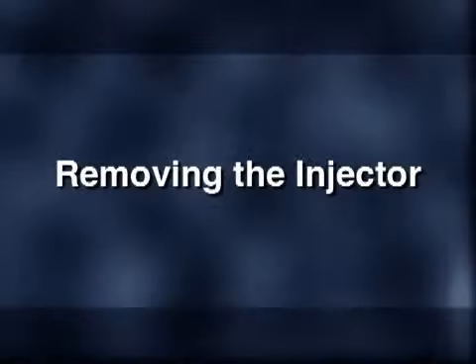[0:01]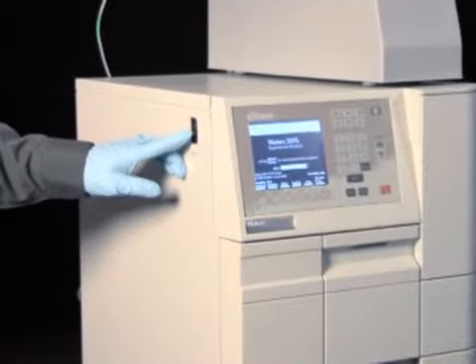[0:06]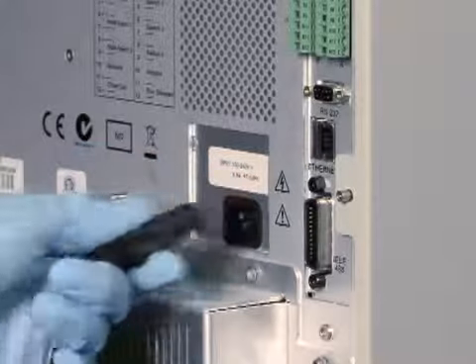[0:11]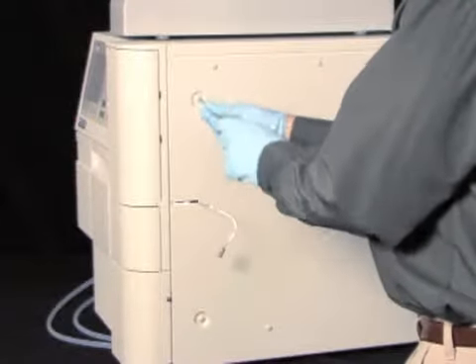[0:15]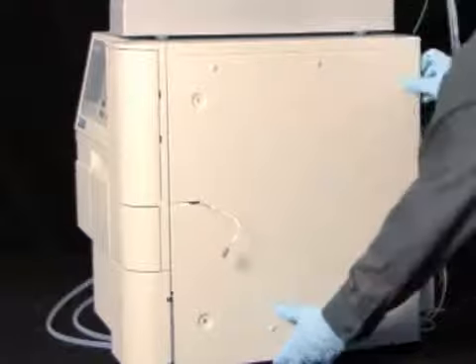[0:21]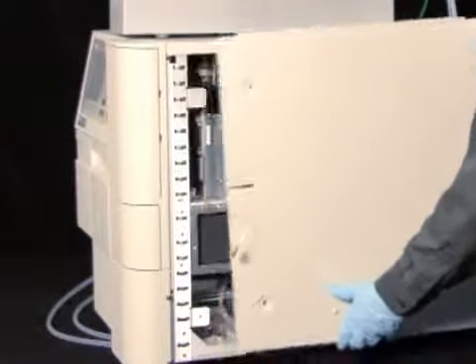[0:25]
Turn the 2695 separations module off and disconnect the power cord. If present, remove the optional column heater or column heater cooler by lifting it from its keyed ports, and then disconnecting its cable from the rear of the separations module. Remove the right side panel.
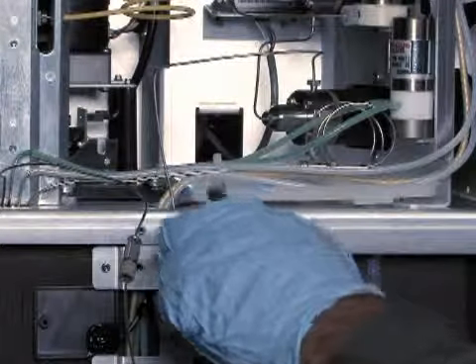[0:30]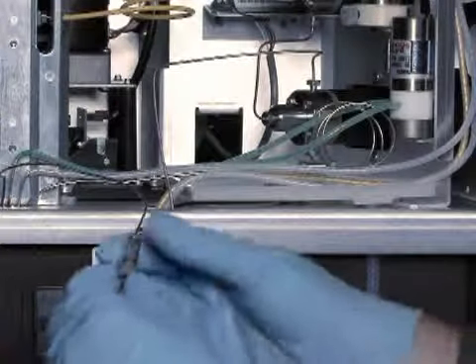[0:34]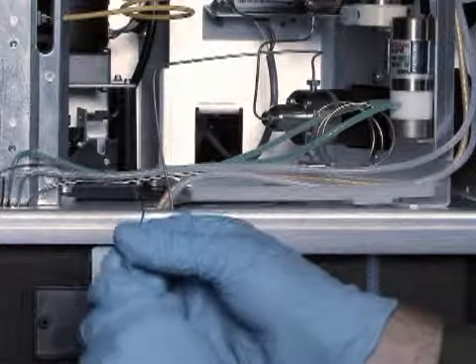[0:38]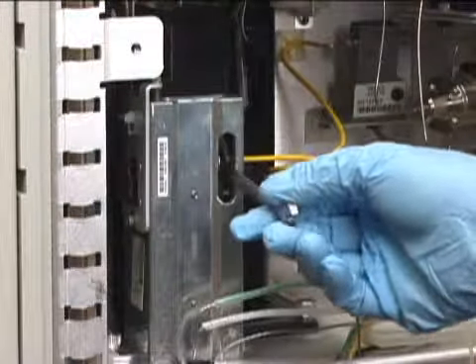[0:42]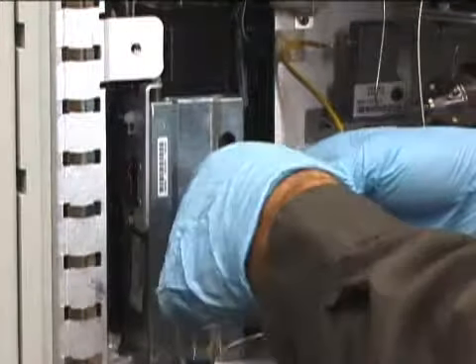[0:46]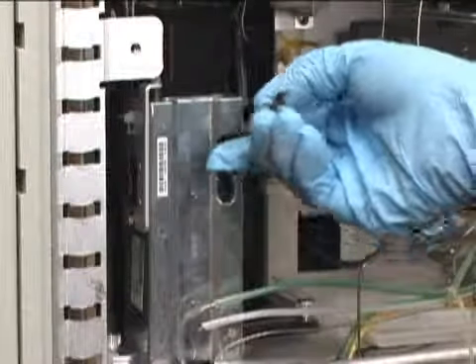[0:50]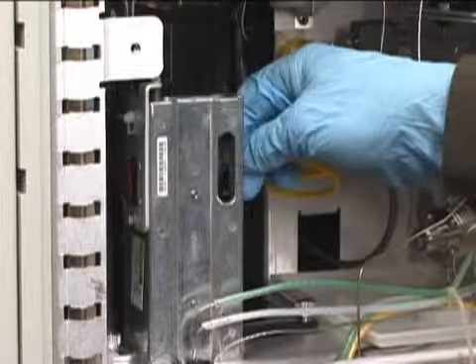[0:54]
Next, cut and remove the tie wraps securing the needle wash lines and restrictor loop. Disconnect the column fluid line between the injector assembly and the column. Using two 5/16" open-end wrenches, position one on the compression fitting of the sample loop and the other on the needle T. Loosen and remove the sample loop from the T.
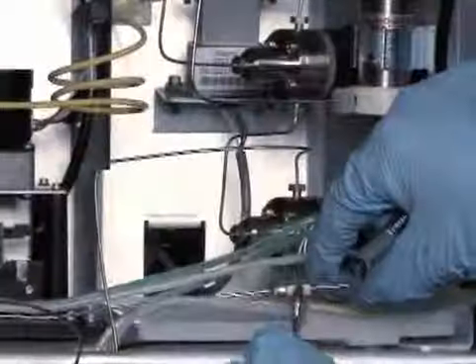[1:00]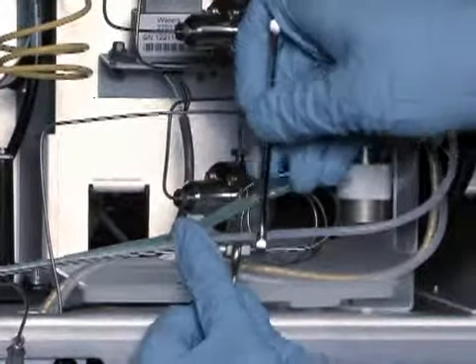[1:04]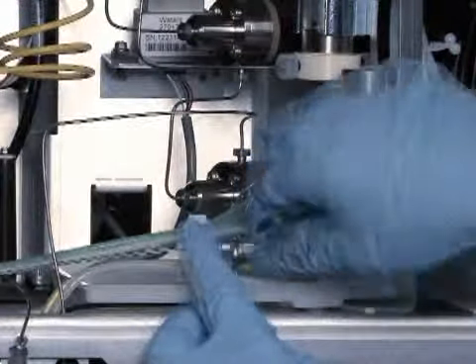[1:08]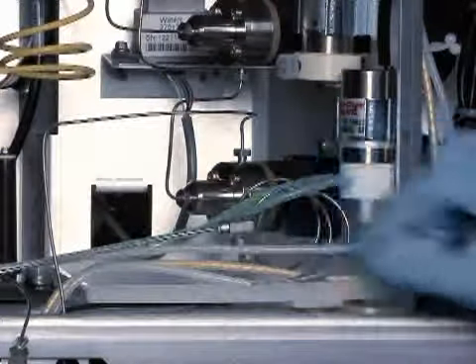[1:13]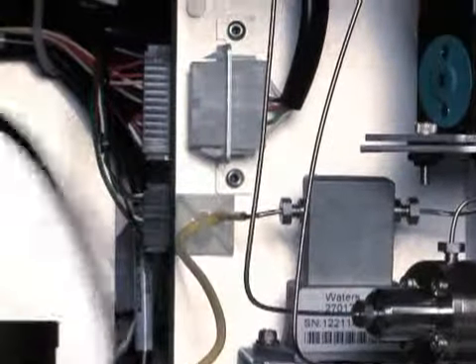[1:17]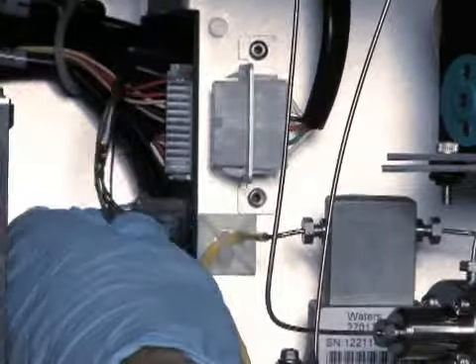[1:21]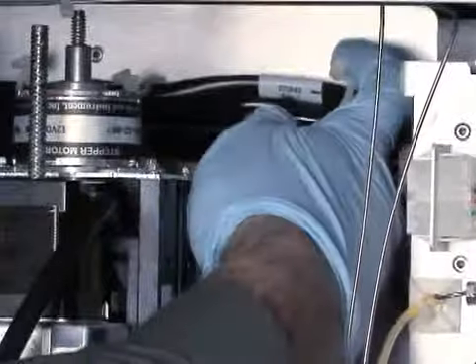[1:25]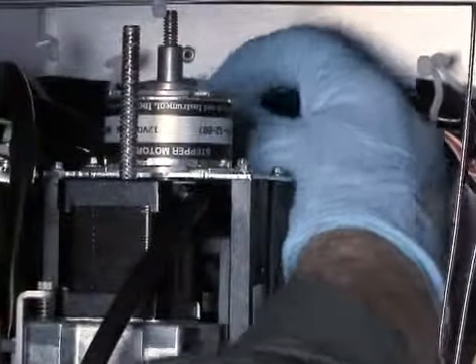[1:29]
Using two 5/16" open-end wrenches, remove the restrictor loop that's attached to the shorter of the two stainless steel tubes exiting the bottom of the injector. Disconnect the injector motor cable from the interconnect on the chassis-mounted bracket. Disconnect the optical switch cable from the driver circuit board. Then untie the four reusable tie wraps to free the optical switch.
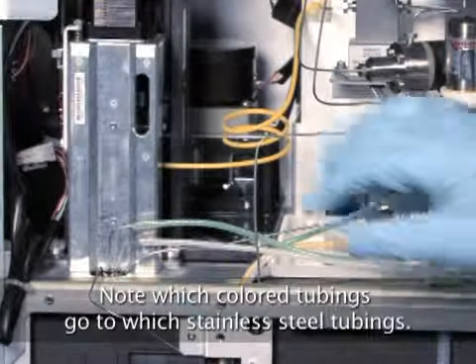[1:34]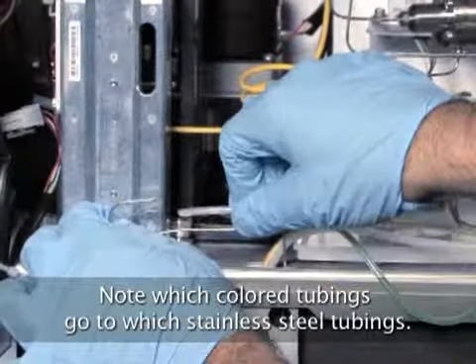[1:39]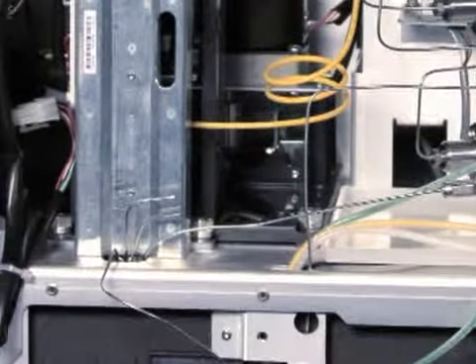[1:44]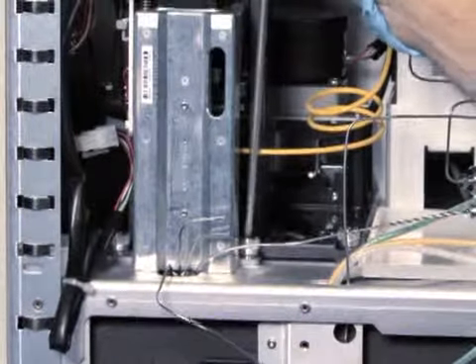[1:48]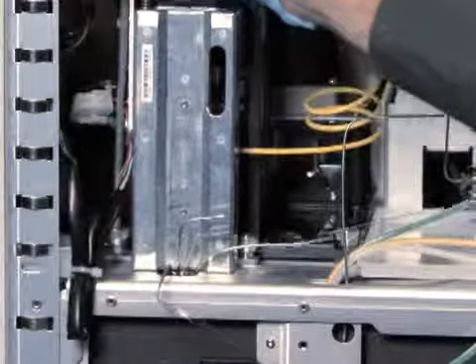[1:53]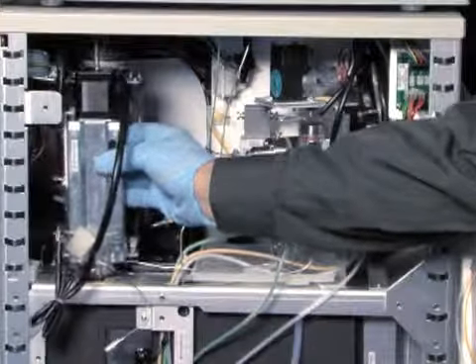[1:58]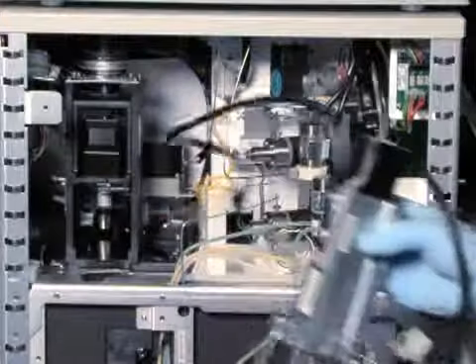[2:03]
Remove the green needle wash inlet line and the yellow or clear needle wash outlet line from the stainless steel connecting lines at the bottom of the injector. Loosen the two captive mounting screws that secure the injector to the chassis. Lift the injector assembly a few inches and then carefully remove it and its cable from the instrument. Carefully lay the injector on a clean surface on its side.
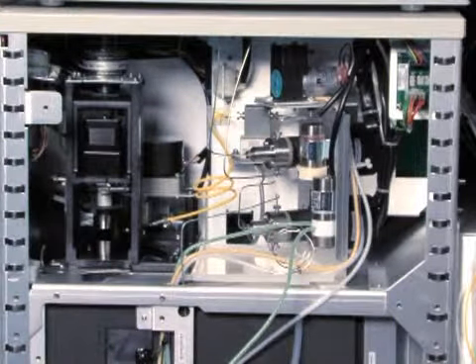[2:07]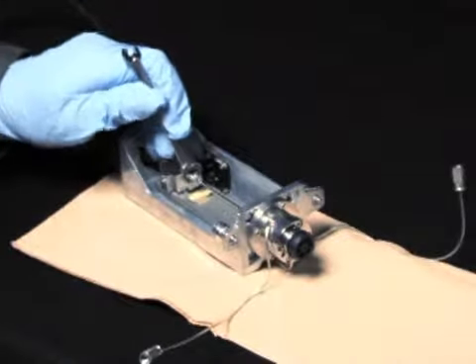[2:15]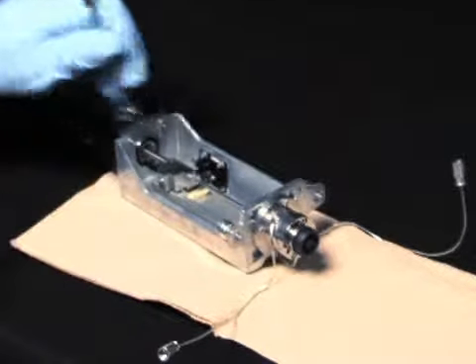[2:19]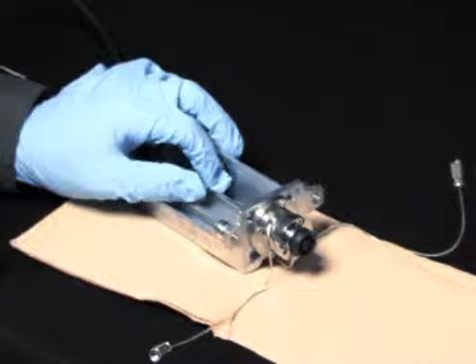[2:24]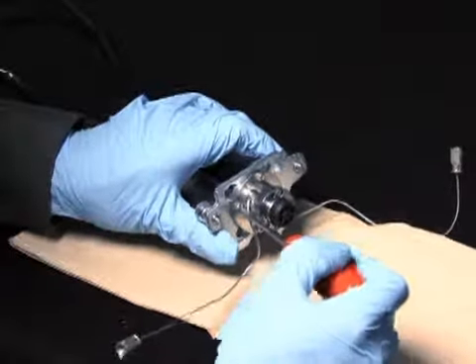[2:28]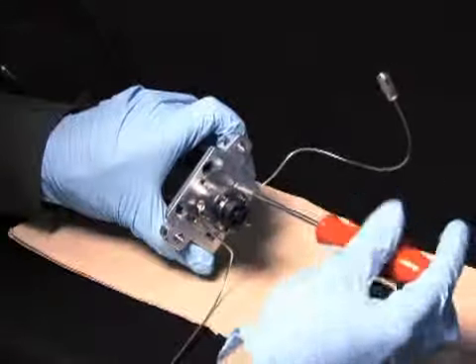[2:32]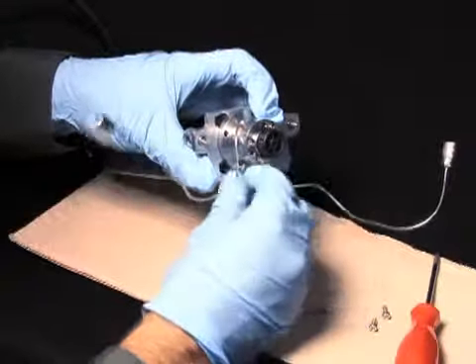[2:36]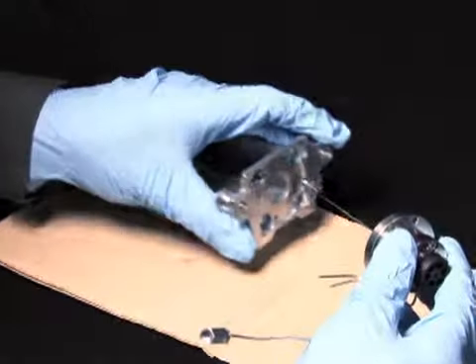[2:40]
Using two 5/16" open-end wrenches, disconnect the injector needle from the needle T. Loosen and remove the four M3 screws that secure the seal pack to the base of the injector. Finally, remove the seal pack with needle and place it on a clean surface.
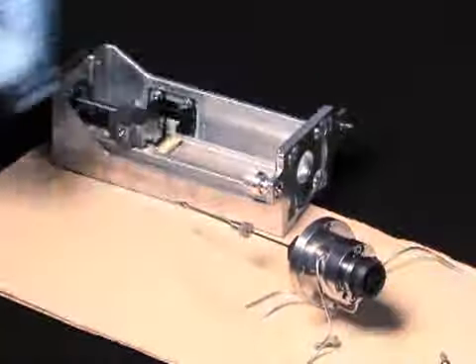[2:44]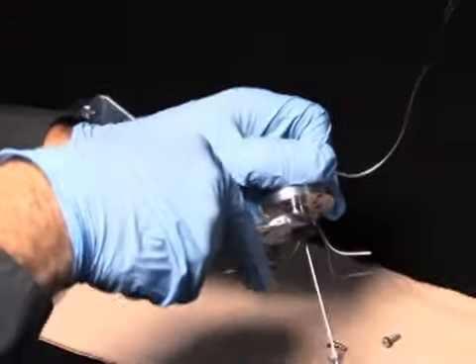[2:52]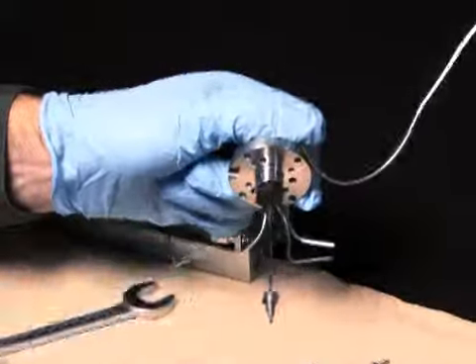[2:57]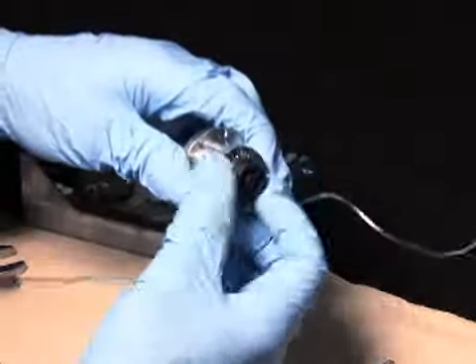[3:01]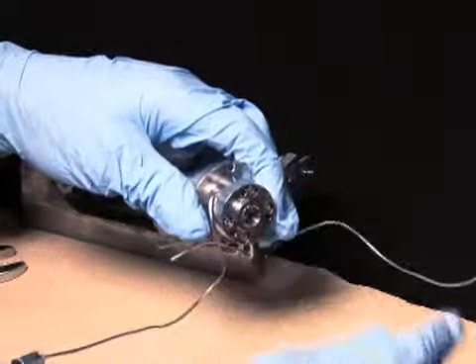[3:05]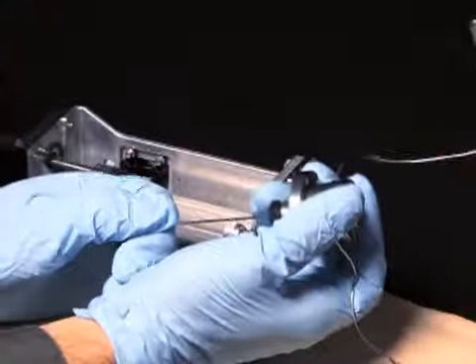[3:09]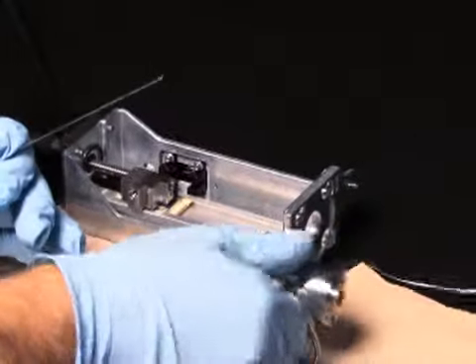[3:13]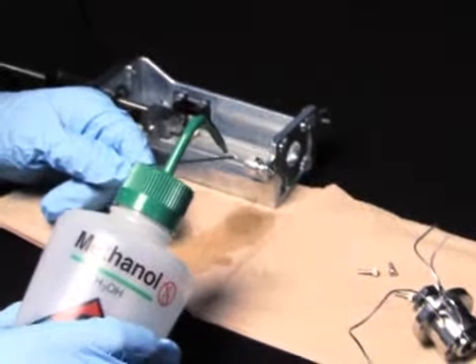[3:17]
To remove the needle, loosen the seal pack's upper and lower frit retainers. The upper frit retainer requires a 5/16" open-end wrench. Grasp the upper end of the needle and carefully withdraw the needle from the seal pack. Lubricate the tip of the new injector needle with 100% alcohol.
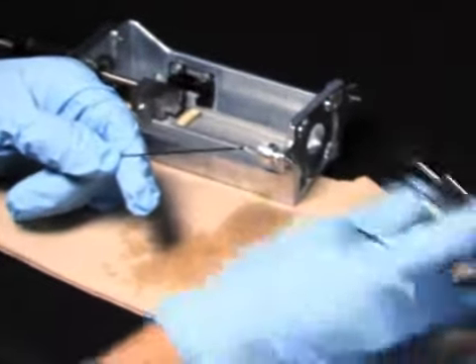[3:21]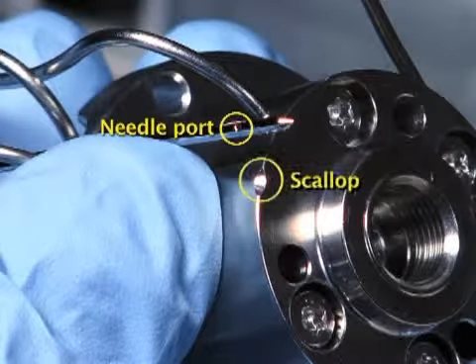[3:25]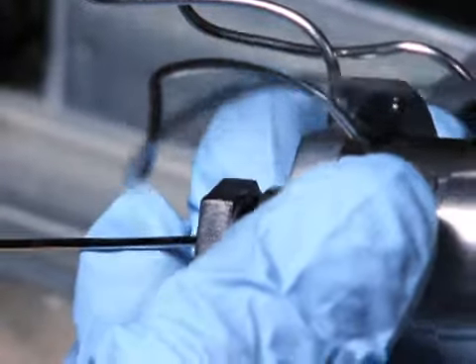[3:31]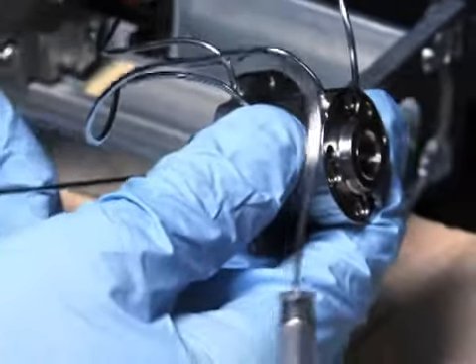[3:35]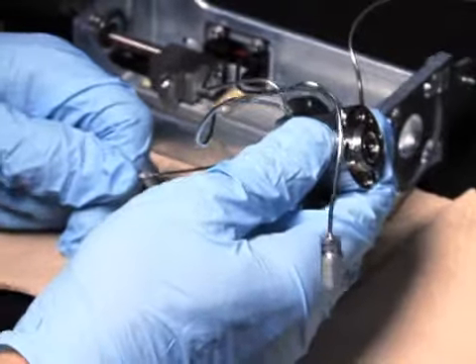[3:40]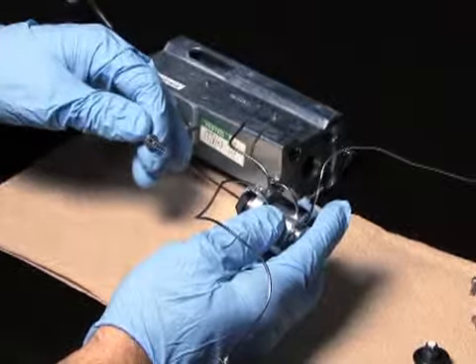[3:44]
Next, orient the needle port about 1/8 inch to the left of the scallop located on the underside of the seal pack. Then, carefully slide the seal pack onto the needle. The needle should align with the scallop when the compression screw is tightened. Place the needle compression screw and ferrule onto the upper end of the needle.
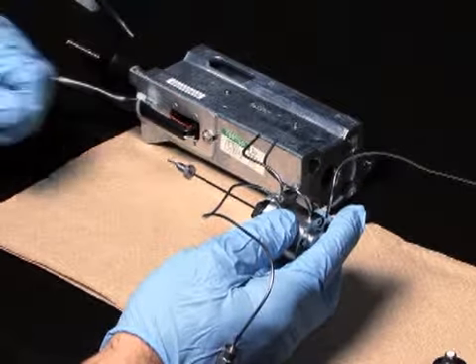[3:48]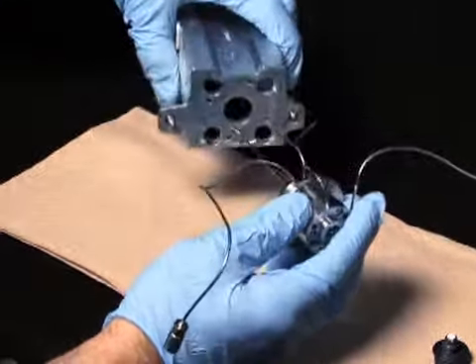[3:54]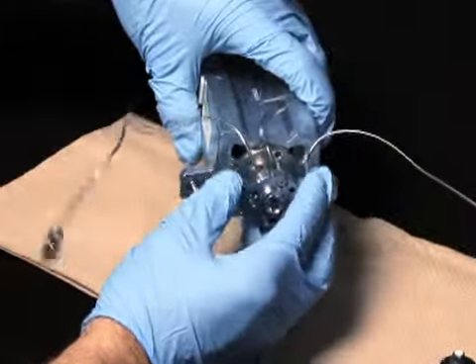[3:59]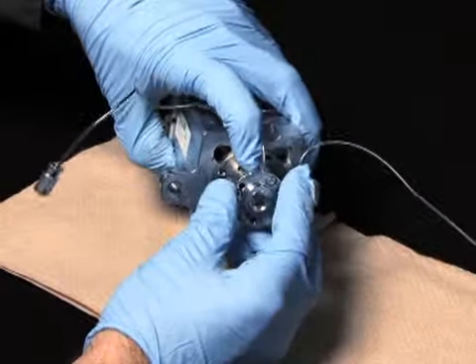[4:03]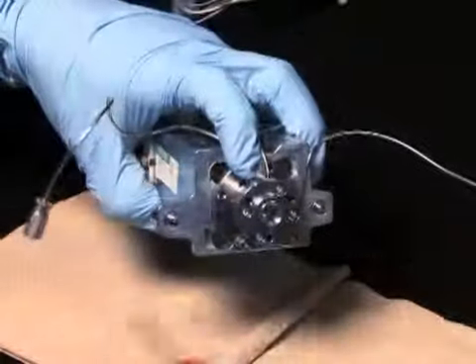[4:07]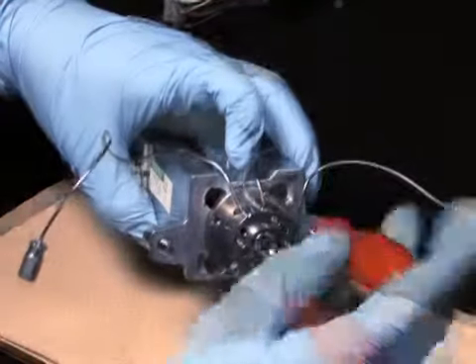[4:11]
Next, position the seal pack with needle so that the stainless steel needle wash lines face the channel in the back of the injector. Align the four holes in the seal pack and injector base, and insert the seal pack with needle into the injector base. Reinstall the four screws that secure the seal pack to the injector base plate. Do not tighten.
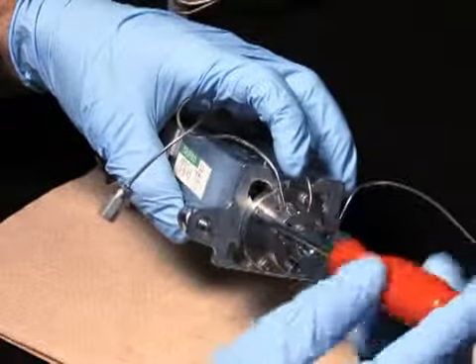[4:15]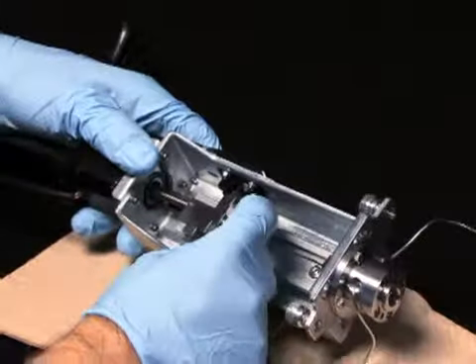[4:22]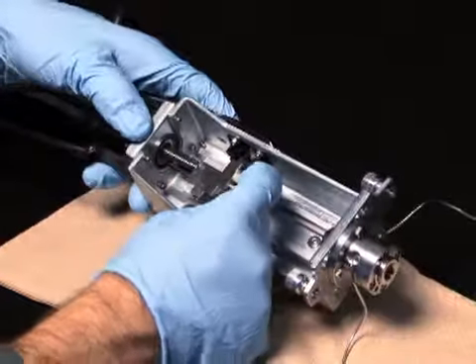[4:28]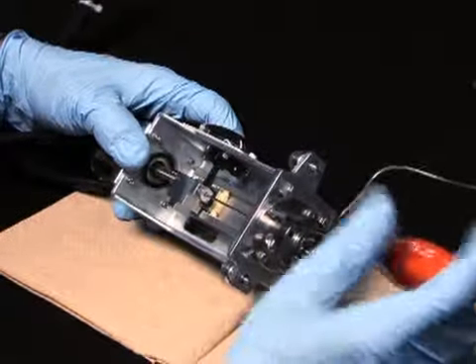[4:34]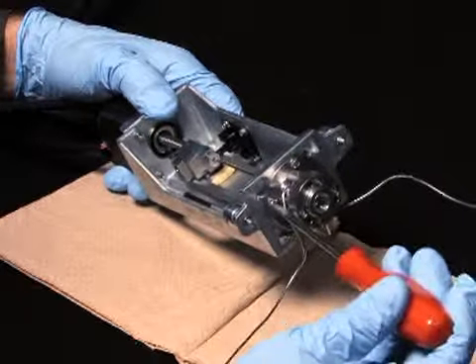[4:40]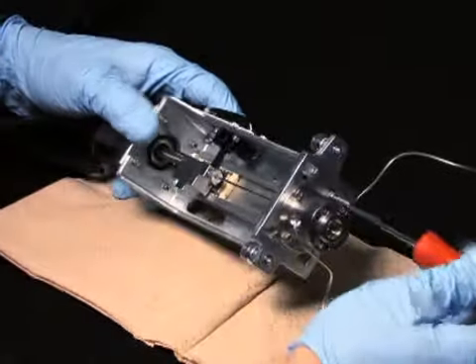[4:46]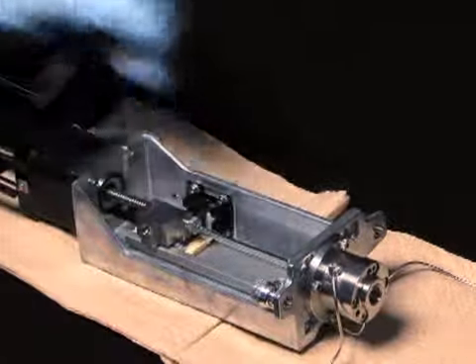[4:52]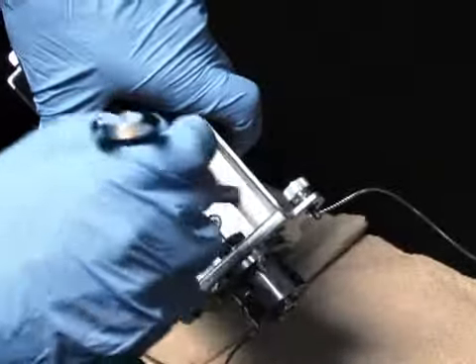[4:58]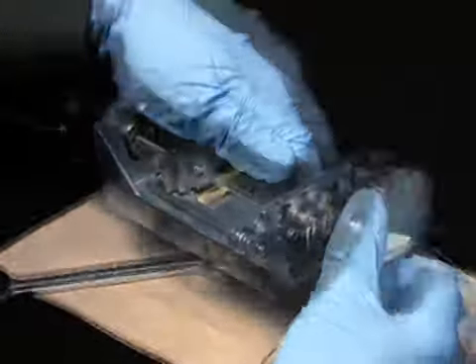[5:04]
Continue to guide the needle and ferrule into the needle T until it seats. Then, hand tighten the compression screw. Now, tighten the four T10 Torx screws that secure the seal pack to the injector base. Use the 5/16" open-end wrench to tighten the needle compression screw. Finally, reinstall and tighten the upper and lower needle wash frit retainers.
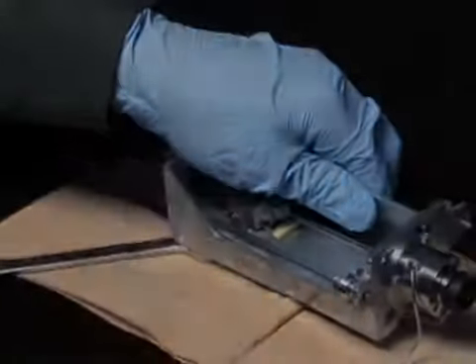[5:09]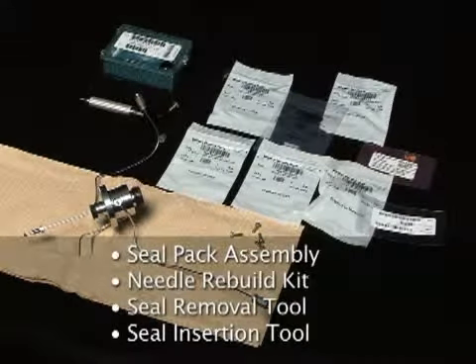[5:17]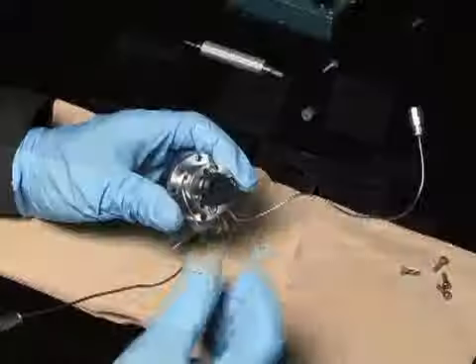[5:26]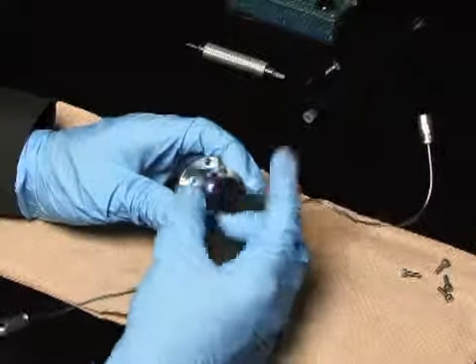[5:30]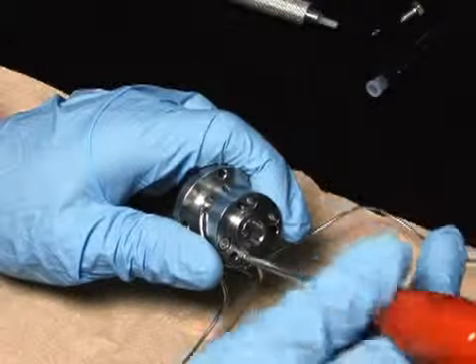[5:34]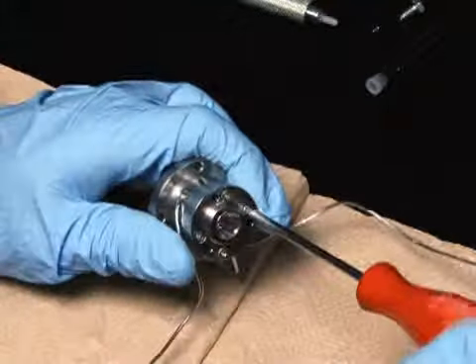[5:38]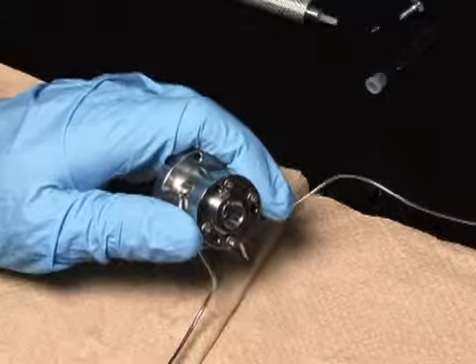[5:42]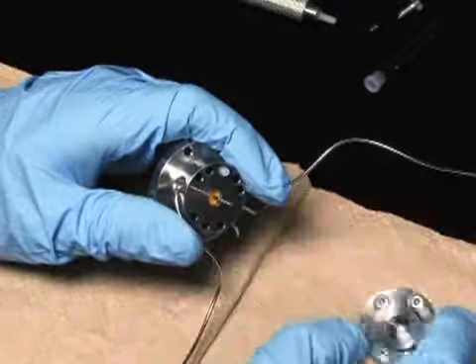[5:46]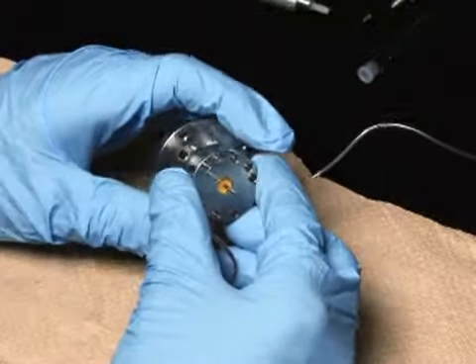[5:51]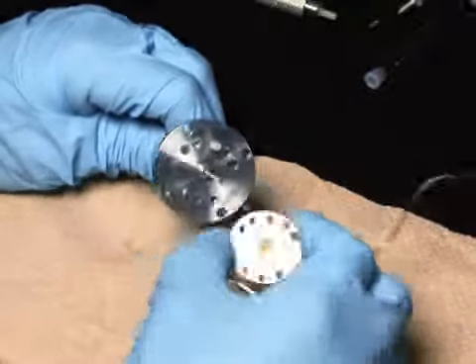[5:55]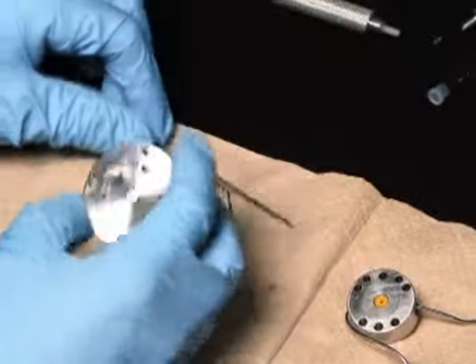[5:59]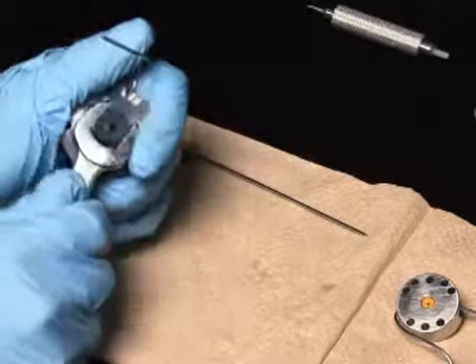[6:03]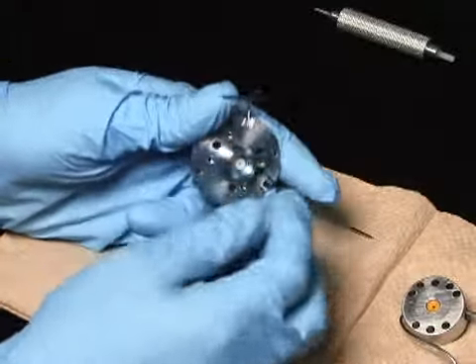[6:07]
To rebuild the seal pack, you will need the seal pack rebuild kit with needle, seal removal tool, and seal insertion tool. Remove the frit retainer from the lower wash body. Separate the upper seal wash body, the seal body, and the lower seal wash body. Using a 9/16" open-end wrench, remove the frit retainer from the upper seal wash body and remove the Teflon washer.
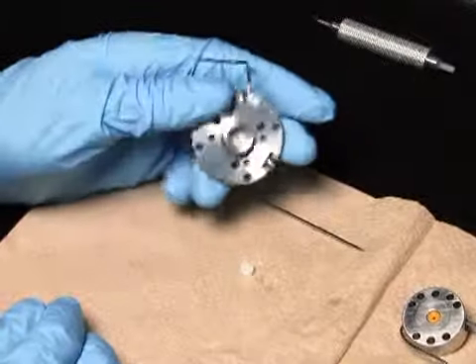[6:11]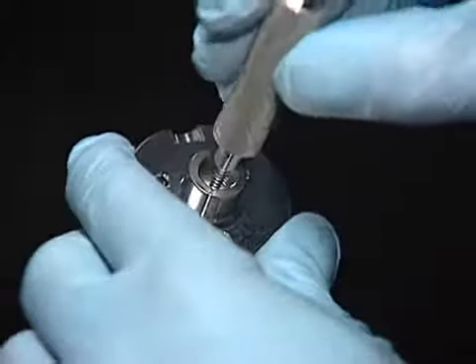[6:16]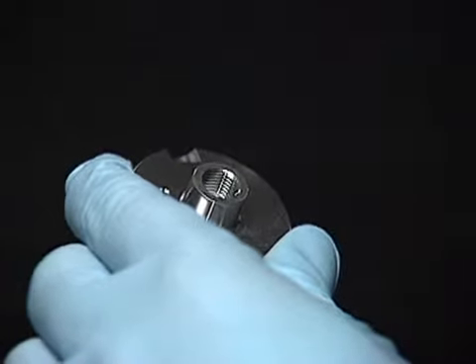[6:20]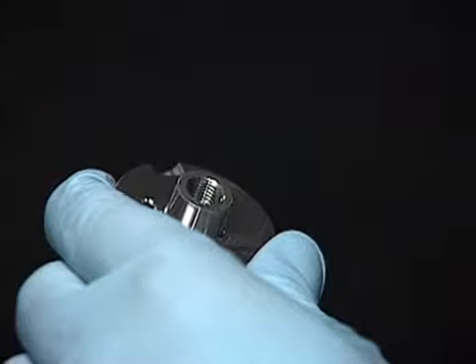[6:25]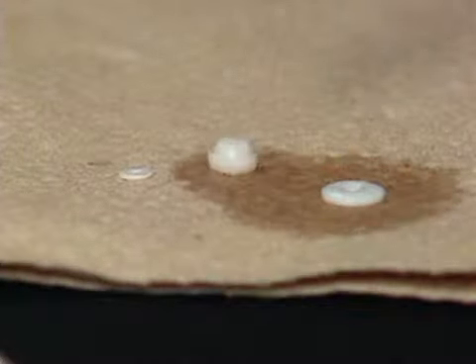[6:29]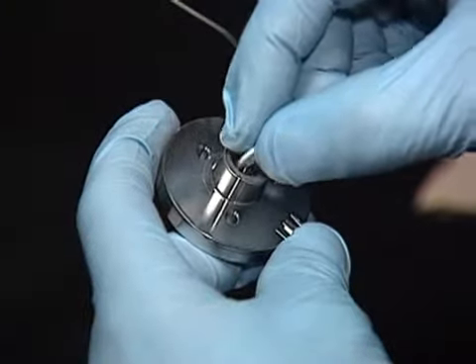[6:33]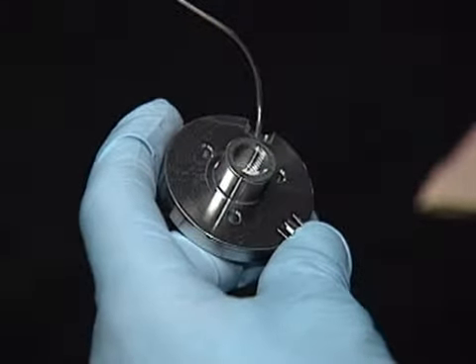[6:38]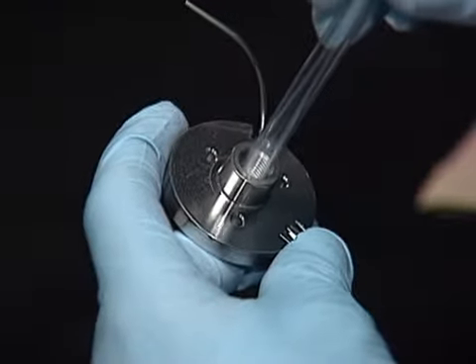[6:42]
Next, using the seal removal tool, remove the needle wash filter from the upper seal wash body and the upper spacer from the upper seal wash body. Wet a new upper spacer, needle wash filter, and Teflon washer with methanol. Press the upper spacer into the upper seal wash body. Use a flat-ended object, such as the capped end of a plastic pen, to ensure the spacer is firmly seated.
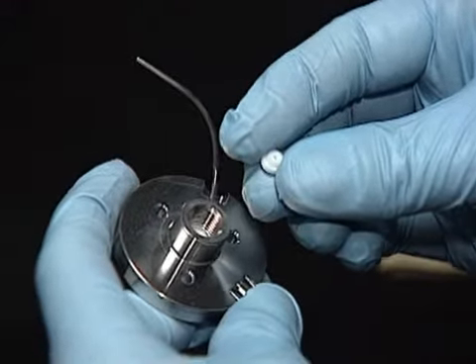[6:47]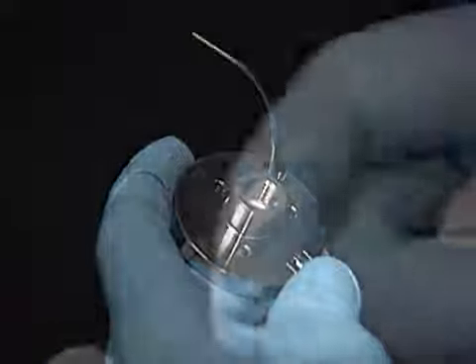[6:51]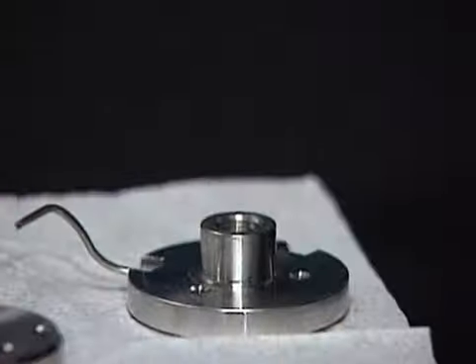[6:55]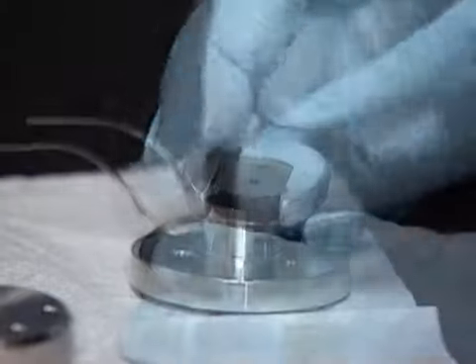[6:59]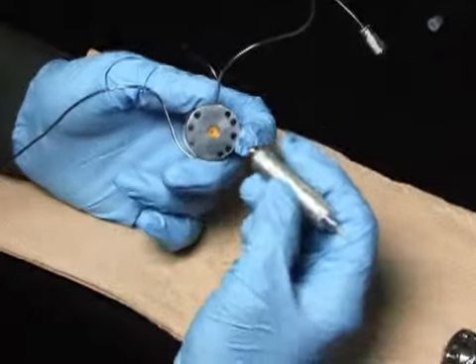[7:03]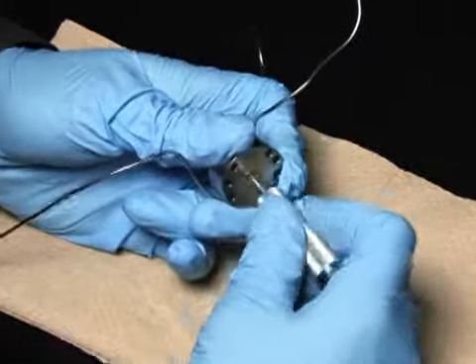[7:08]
Insert a new needle wash filter into the upper seal wash body with a tapered end facing out. Insert a Teflon washer into the frit retainer and then screw the retainer into the upper seal wash body. Tighten using the 9/16" wrench. To rebuild the seal body, use the seal removal tool to remove the upper and lower seals in the seal body.
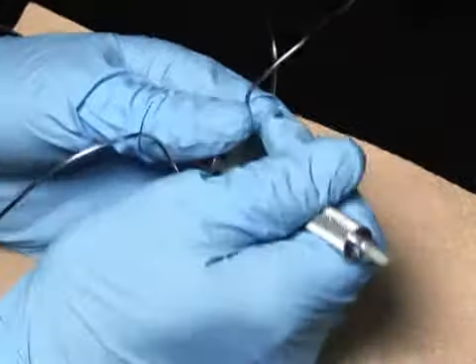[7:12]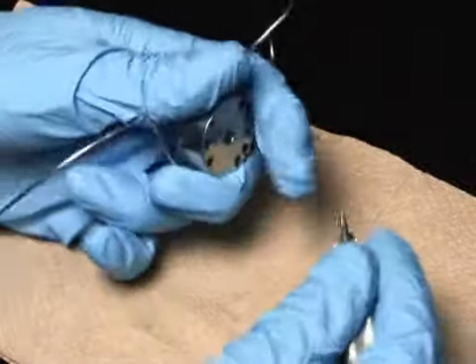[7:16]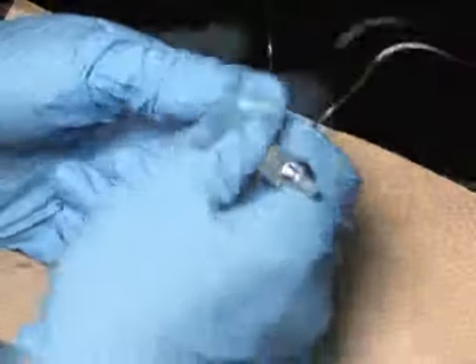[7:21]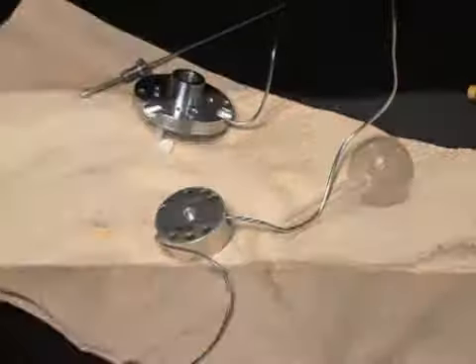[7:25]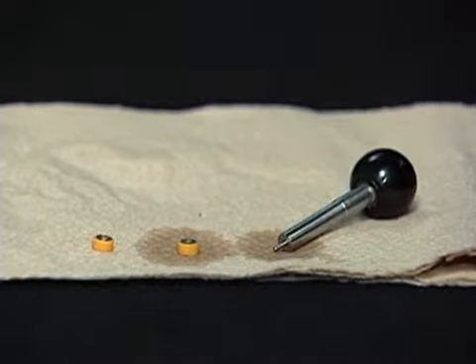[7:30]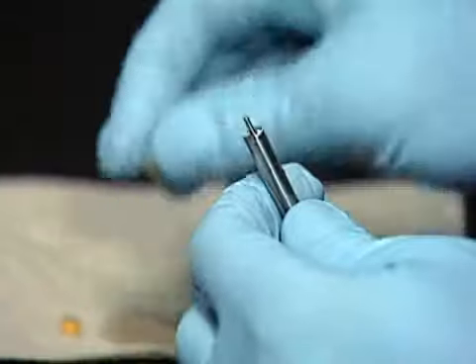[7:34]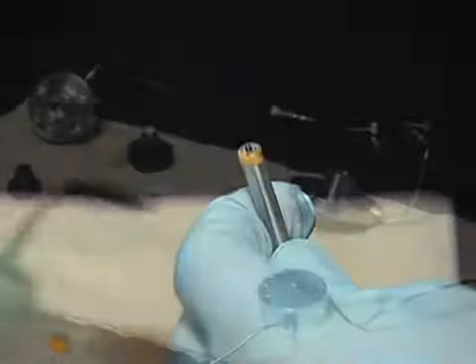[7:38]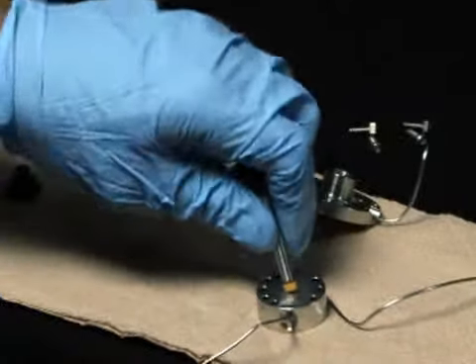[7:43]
If you have purchased the seal pack replacement kit, an assembled seal wash body is included, making the rebuilding of the seal body shown here unnecessary. Wet the upper replacement high-pressure seal and the end of the seal insertion tool with 100% methanol. Then place the high-pressure seal with the spring side facing up onto the insertion tool. Wet the seal body and insert the replacement seal into the body.
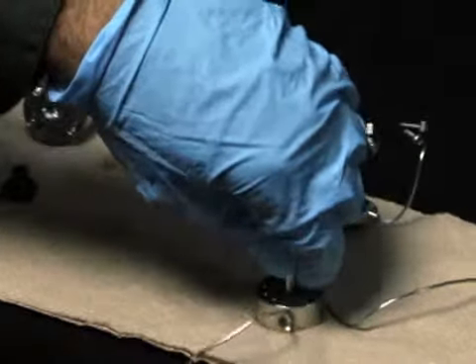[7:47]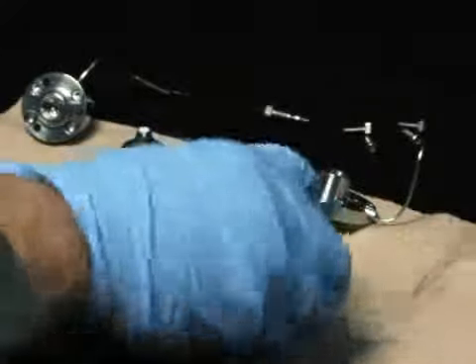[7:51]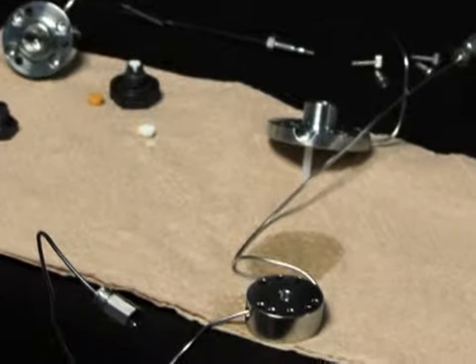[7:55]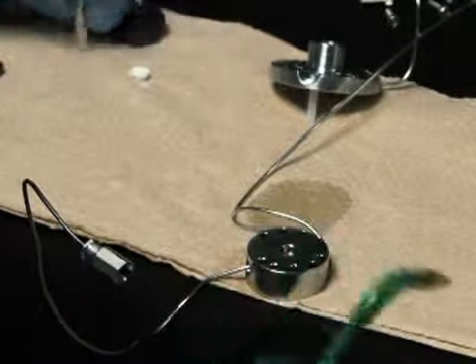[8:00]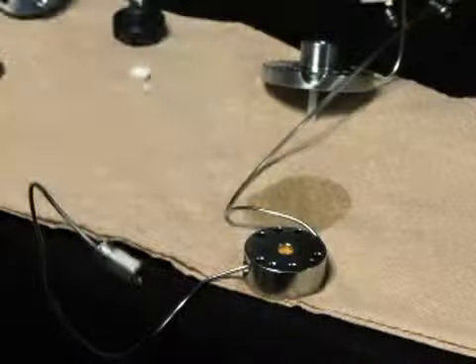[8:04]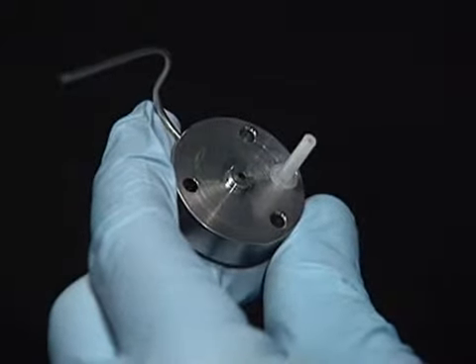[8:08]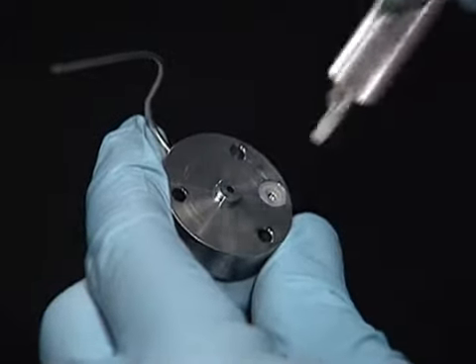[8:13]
Repeat the seal body rebuilding procedure to replace the remaining high-pressure seal found on the other side of the seal body. Next, position the lower seal wash body with filter retainer side facing down and remove the seal wash alignment tube and seal.
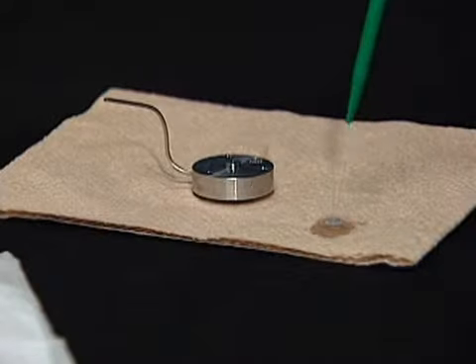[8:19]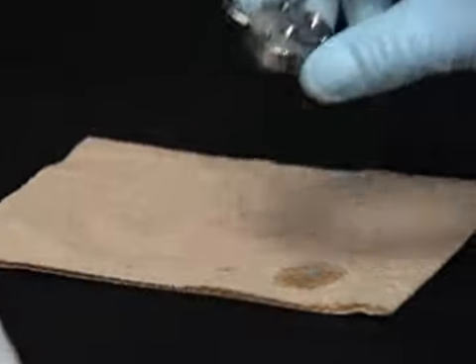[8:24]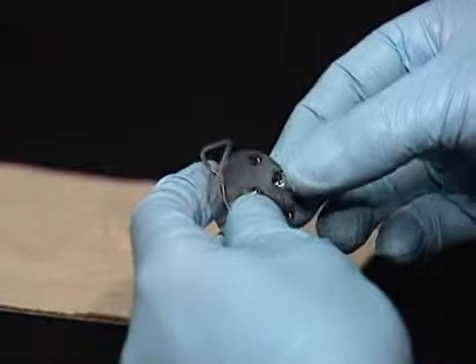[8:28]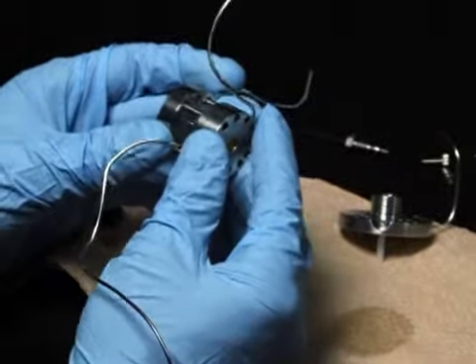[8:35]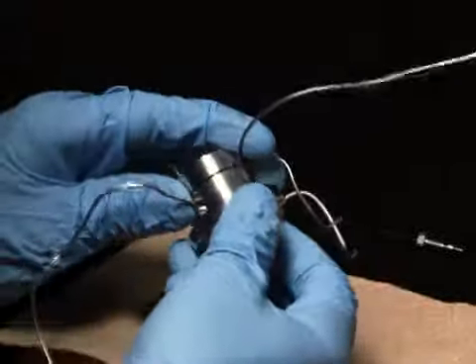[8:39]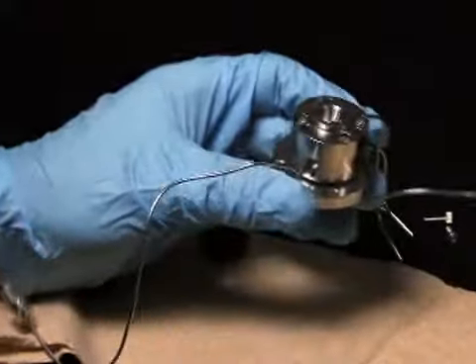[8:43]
Wet a new wash tube seal and the lower seal wash body with methanol. Then insert the new seal and seal alignment tube into the lower seal wash body. Reassemble the lower seal wash body, the seal body, and the upper seal wash body, and secure with the 4 T10 Torx screws.
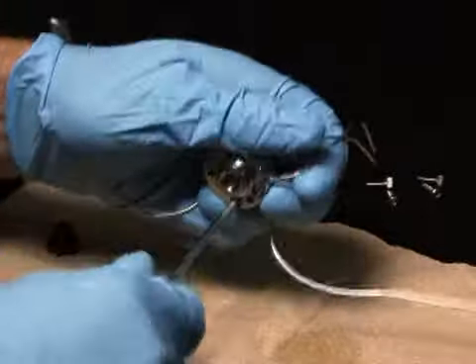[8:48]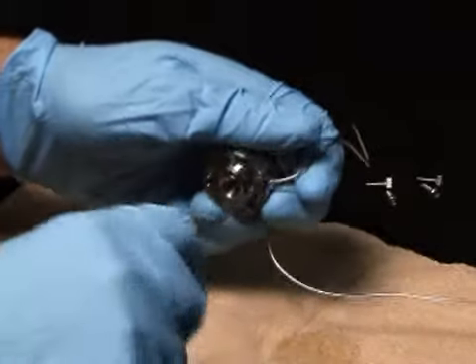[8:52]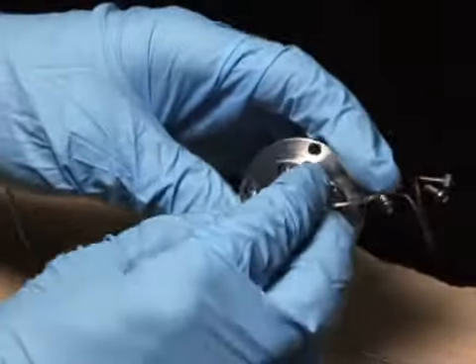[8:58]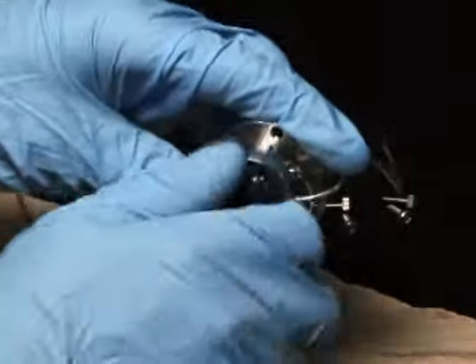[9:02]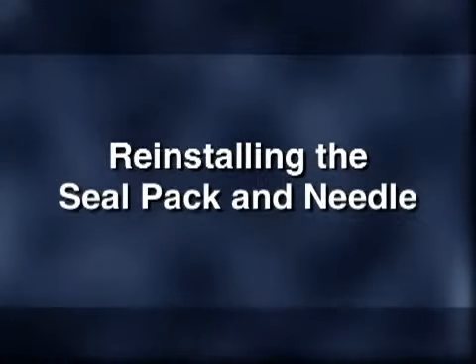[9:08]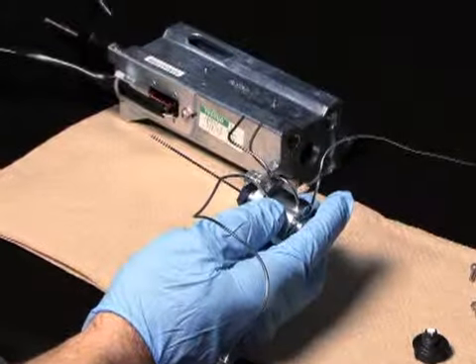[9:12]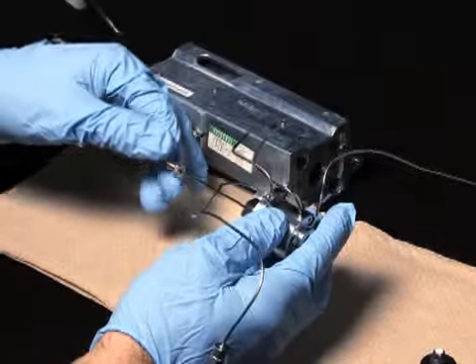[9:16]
Next, place the needle wash filter into the filter retainer. Finally, holding the lower seal wash housing upside down, screw the filter retainer into the housing, finger tight only. Place the needle compression screw and ferrule onto the upper end of the needle.
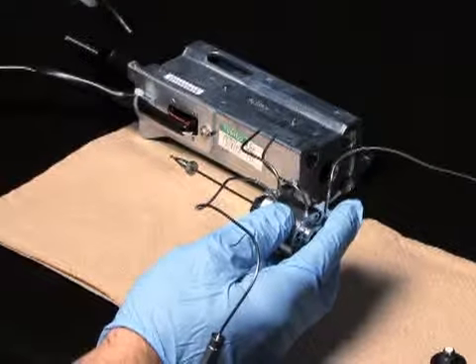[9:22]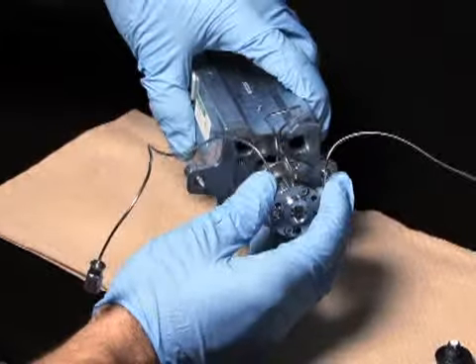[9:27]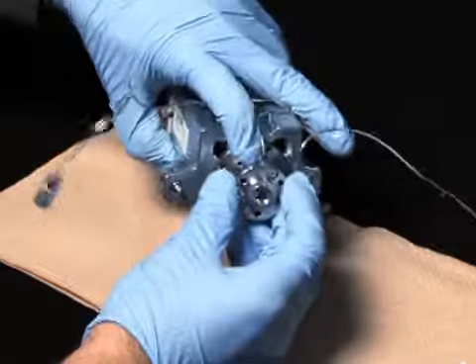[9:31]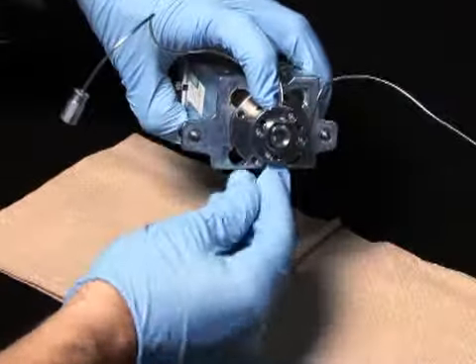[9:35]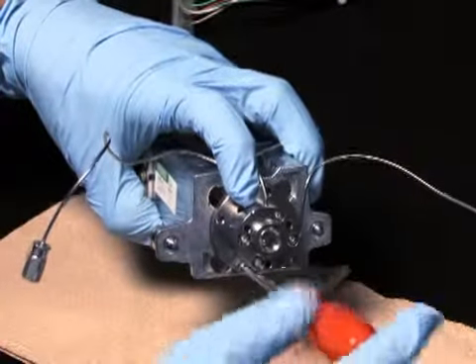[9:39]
Next, position the seal pack with needle so that the stainless steel needle wash lines face the channel in the back of the injector. Align the 4 holes in the seal pack and injector base, and insert the seal pack with needle into the injector base. Reinstall the 4 screws that secure the seal pack to the injector base plate. Do not tighten.
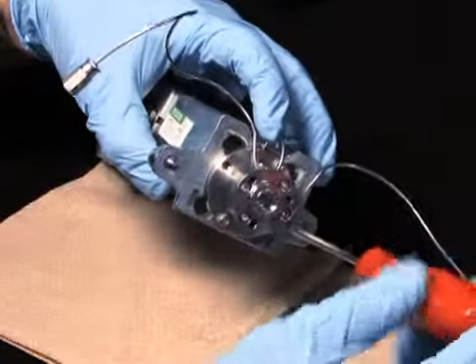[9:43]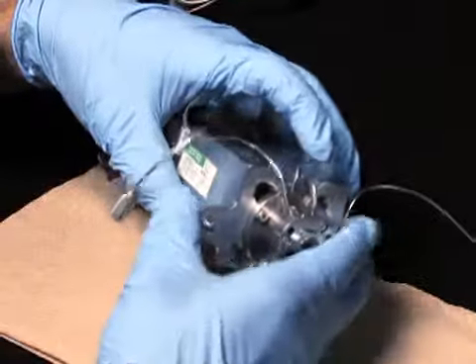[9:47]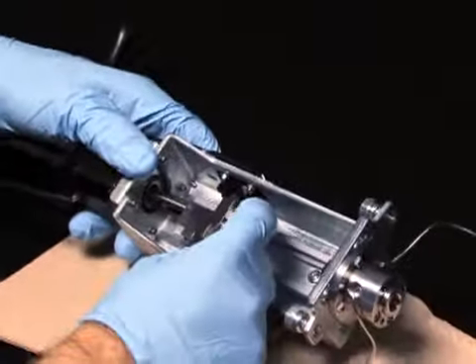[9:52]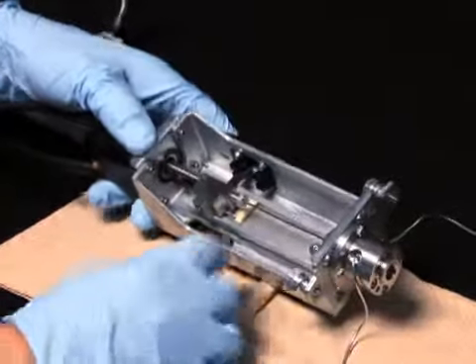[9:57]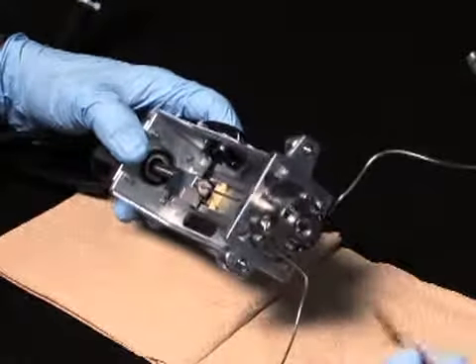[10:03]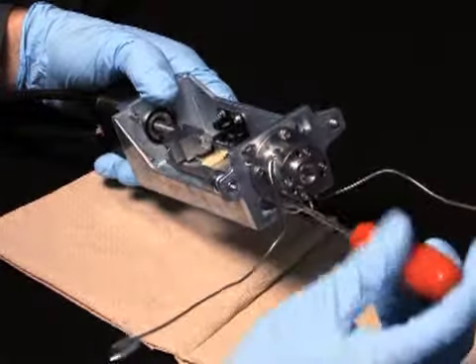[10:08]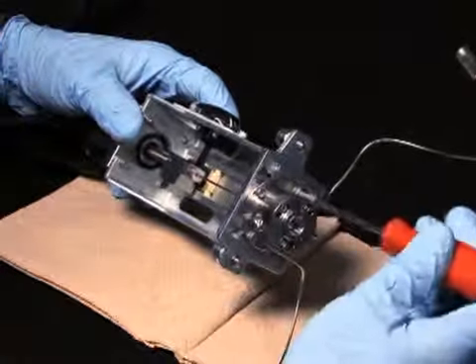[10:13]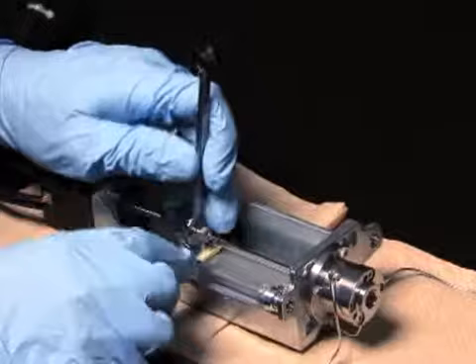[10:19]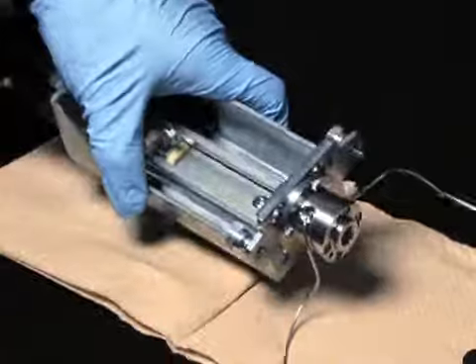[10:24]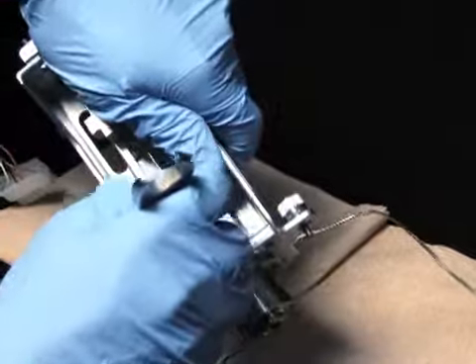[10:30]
Continue to guide the needle and ferrule into the needle T until it seats. Then, hand tighten the compression screw. Now, tighten the 4 T10 Torx screws that secure the seal pack to the injector base. Use the 5/16" open-end wrench to tighten the needle compression screw. Finally, reinstall and tighten the upper and lower needle wash frit retainers.
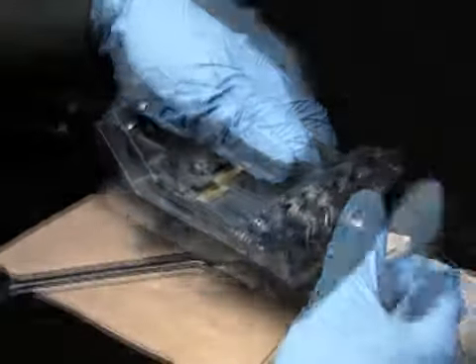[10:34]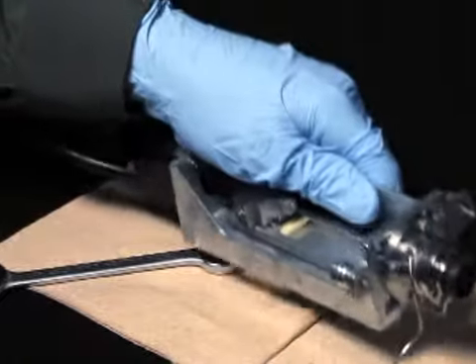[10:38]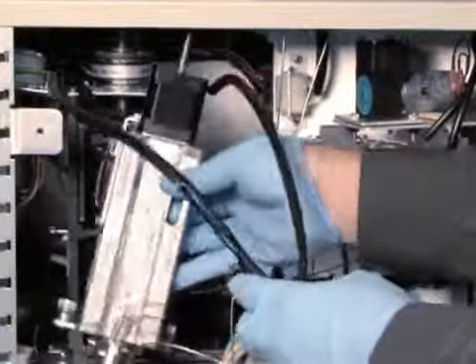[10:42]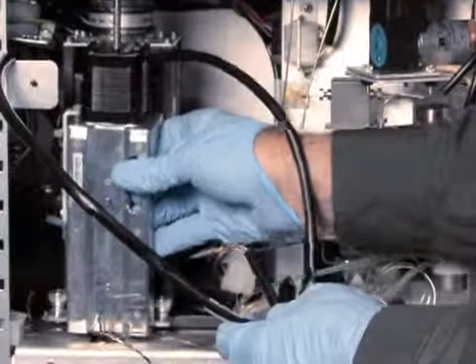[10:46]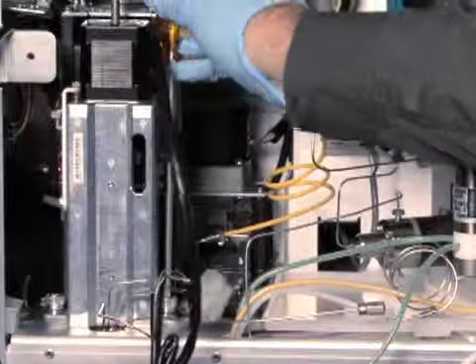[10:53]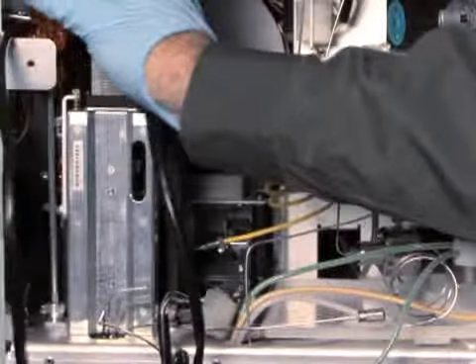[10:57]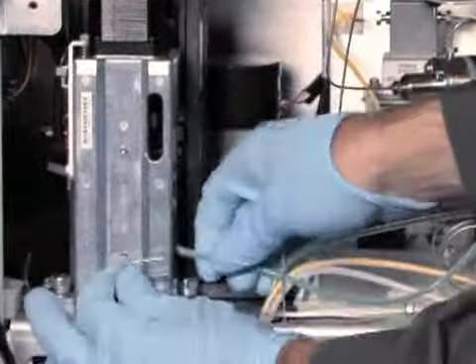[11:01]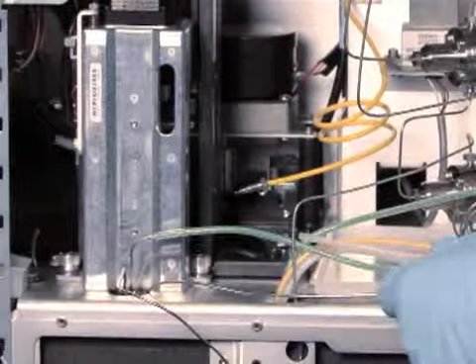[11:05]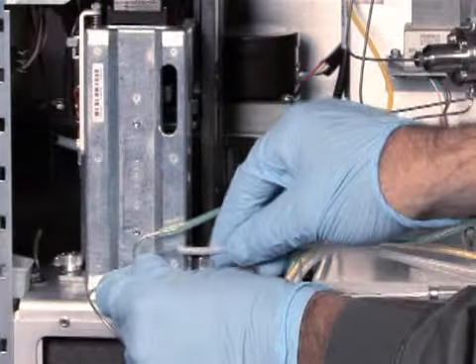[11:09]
Next, install the injector assembly by lowering it so that its tubing is not pinched between the injector base and the compartment floor. Then secure it with the 2 captive screws. Reconnect the green needle wash inlet line and the yellow or clear needle wash outlet line to the stainless steel connecting lines at the bottom of the injector.
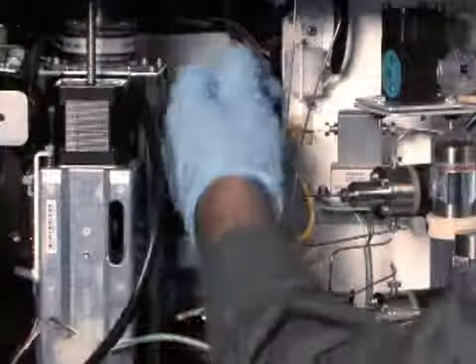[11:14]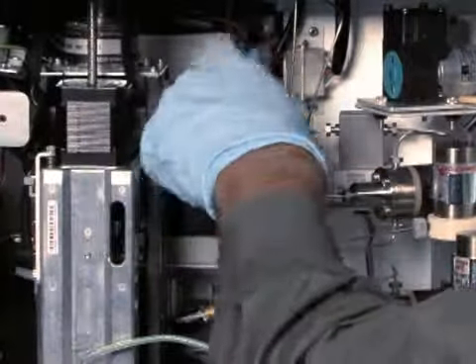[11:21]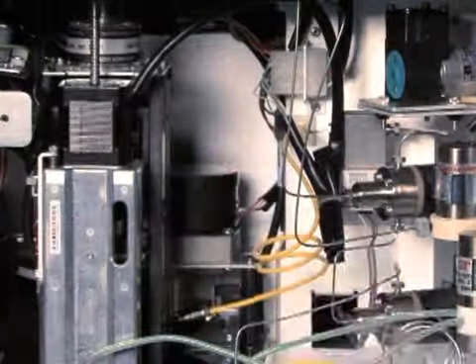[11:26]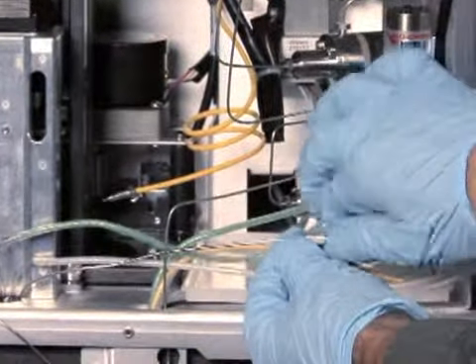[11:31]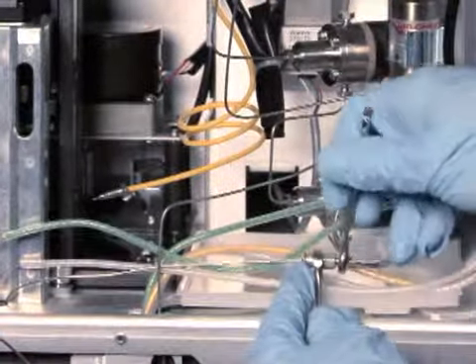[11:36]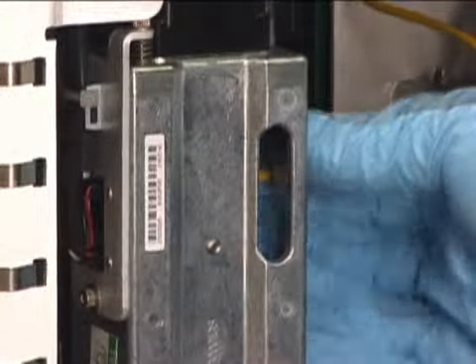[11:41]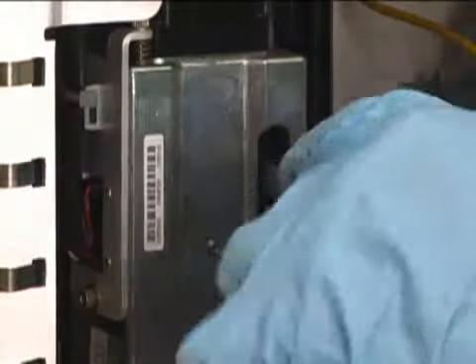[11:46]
Reconnect the optical switch cable to the driver circuit board, the injector motor cable to the interconnect on the chassis-mounted bracket, and the restrictor loop to the fitting attached to the shorter of the 2 stainless steel tubes exiting the injector bottom. Reconnect the sample loop to the needle T and tighten into place using 2 5/16" open-end wrenches.
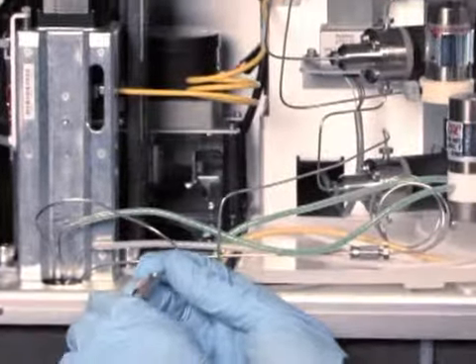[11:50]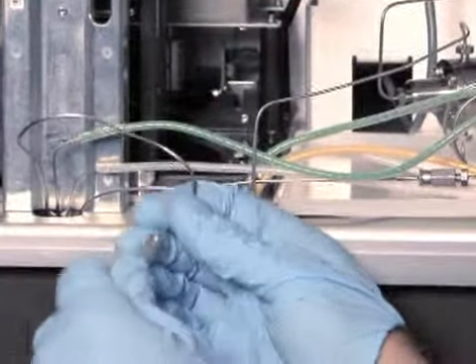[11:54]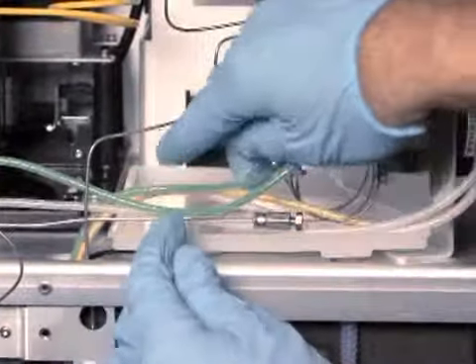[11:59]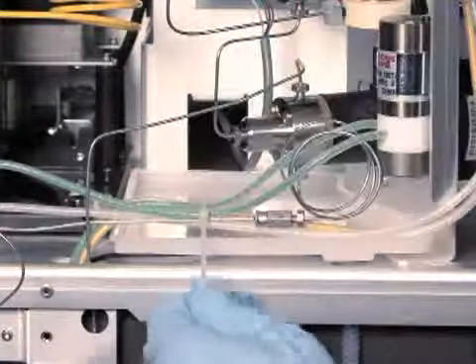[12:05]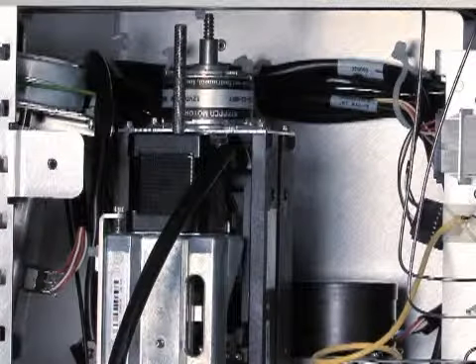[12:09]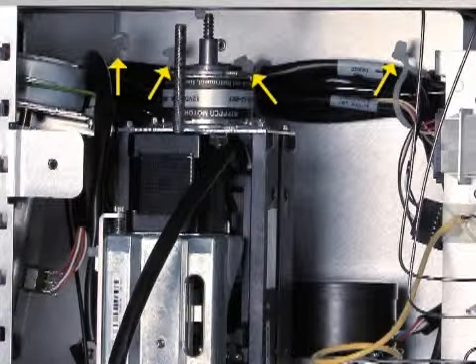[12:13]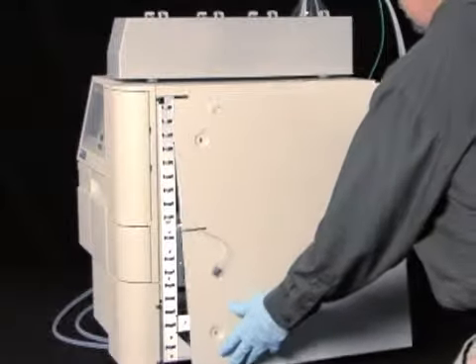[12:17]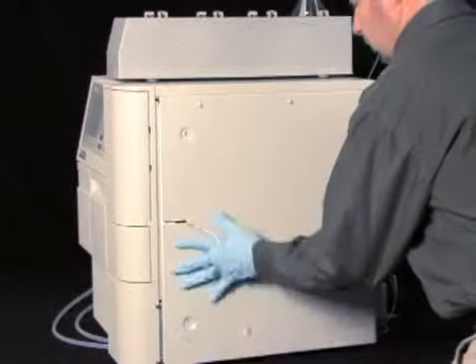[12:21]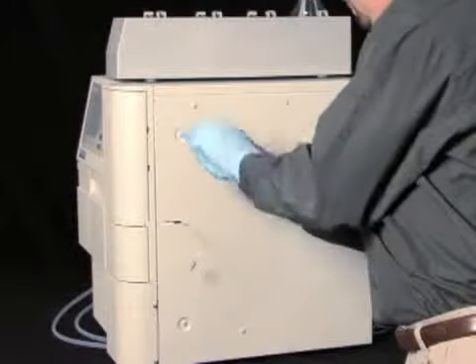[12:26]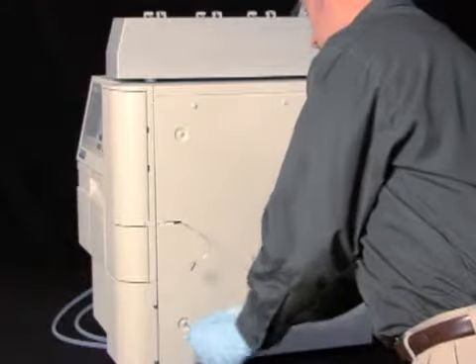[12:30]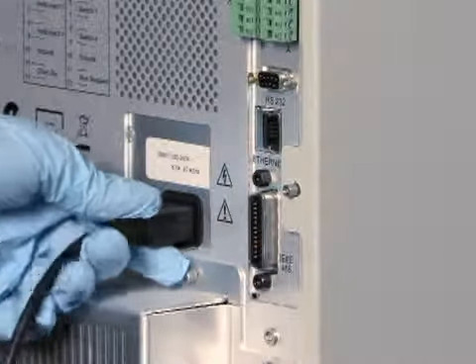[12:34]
Reconnect the column fluidic line between the injector assembly and the column. Use tie wraps to secure the needle wash lines and the restrictor loop. Carefully route the optical switch cable to the back of the chassis and secure it with the tie wraps. Next, refit the separation module's right side panel, and then secure it with the screws. If you removed a column heater or column heater cooler, reconnect the column heater cable and reattach the column heater onto the keyed ports. Finally, reconnect the power cord, and then power on the separations module.
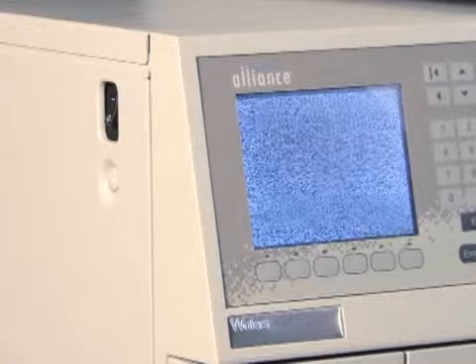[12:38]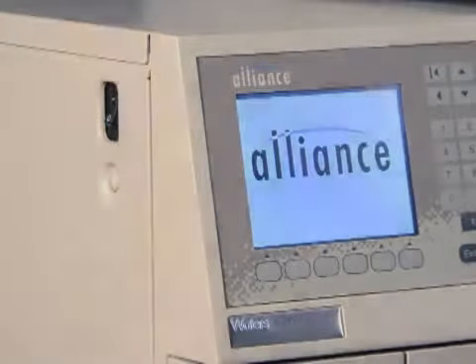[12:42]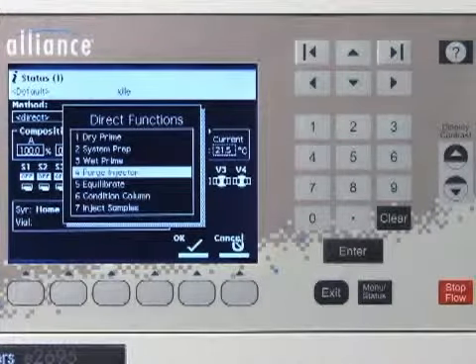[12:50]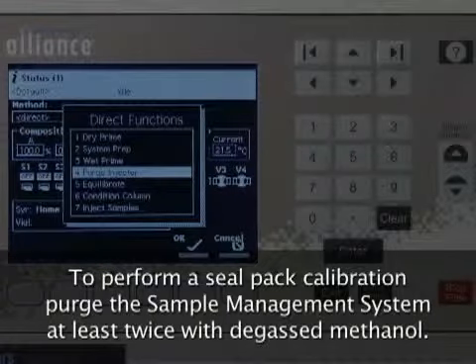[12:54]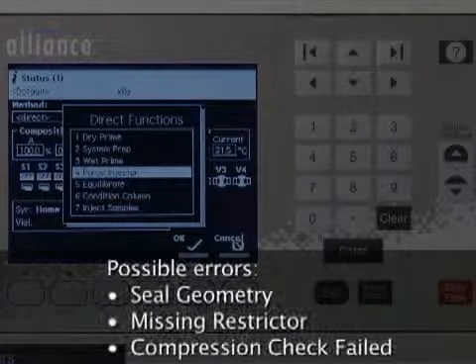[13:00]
After reinstalling the injector, you'll need to adjust the seal pack. To adjust the seal pack, you must first purge the sample management system at least twice using degassed 100% methanol to ensure that there is no air in the syringe. Failure to do so may cause seal geometry, missing restrictor, or compression check failed errors to appear.
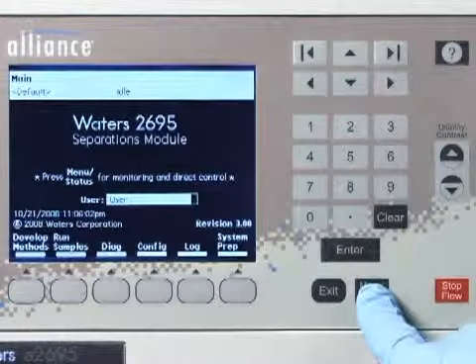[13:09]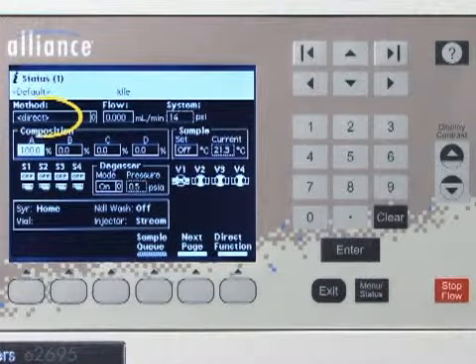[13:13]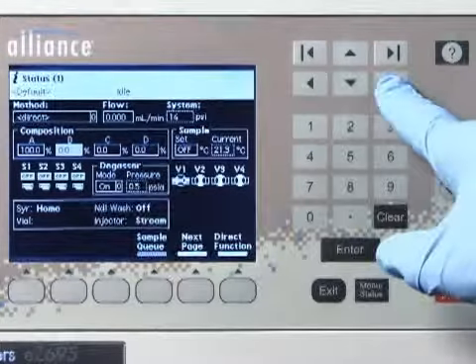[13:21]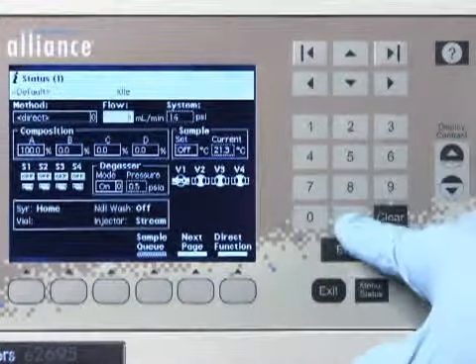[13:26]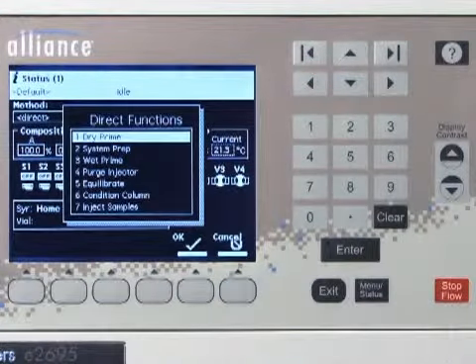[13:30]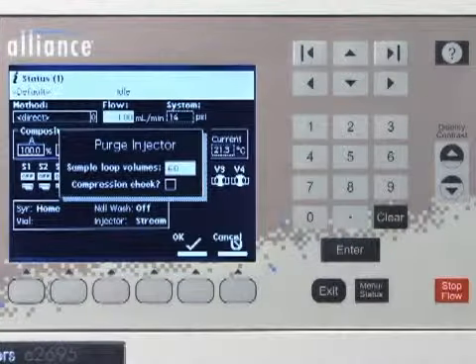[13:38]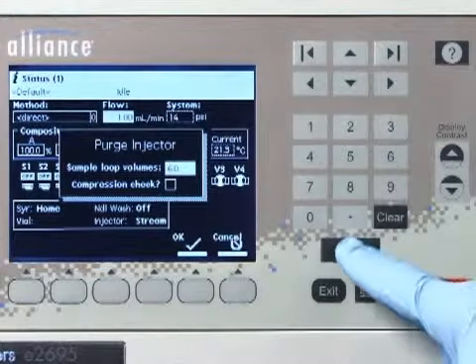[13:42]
To perform the purge, press the menu status key to display the status screen. Then verify that Direct appears in the Method field. Set the pump to deliver 1 milliliter per minute of 100% degassed mobile phase. Next, press the Direct Function screen key. Select Purge Injector, then press Enter. In the Number of Sample Loop Volumes field, enter 6, then press Enter.
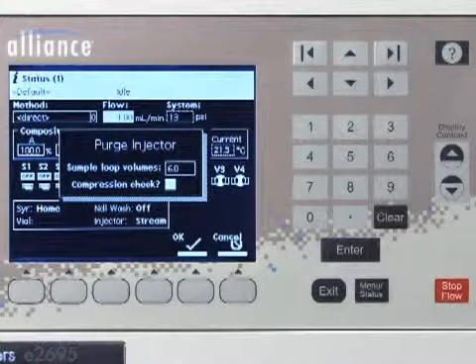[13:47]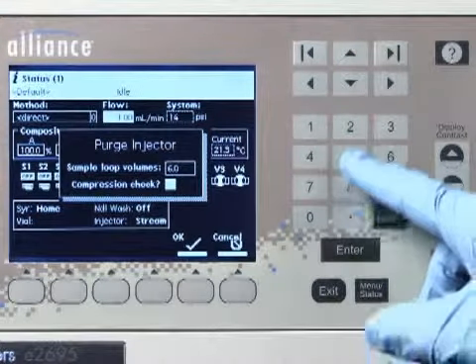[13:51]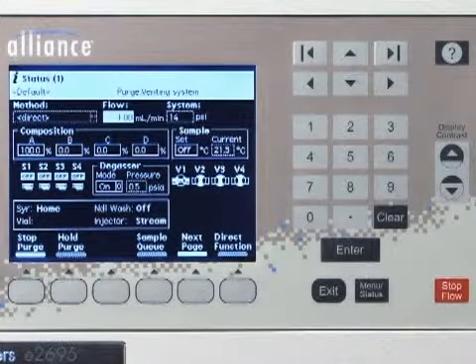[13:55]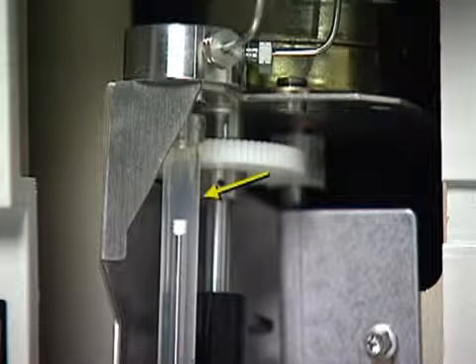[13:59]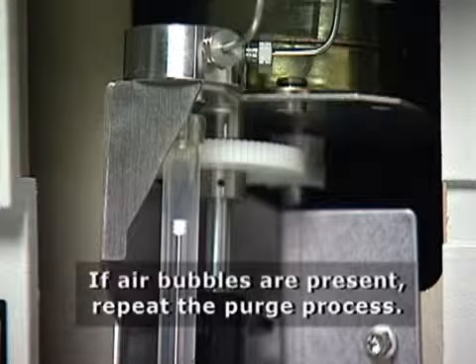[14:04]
To check for air bubbles in the syringe, select the Compression Test checkbox to perform a compression test. Finally, press OK to start the purge cycle. When the cycle is complete, look to see that there are no air bubbles in the syringe. If air bubbles are present, repeat the purge process.
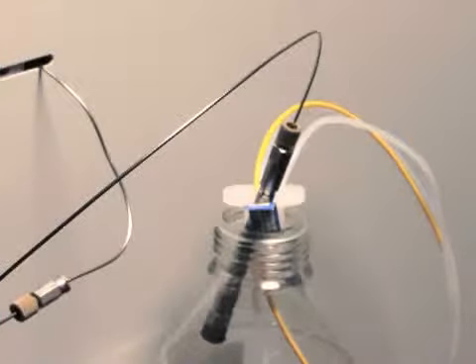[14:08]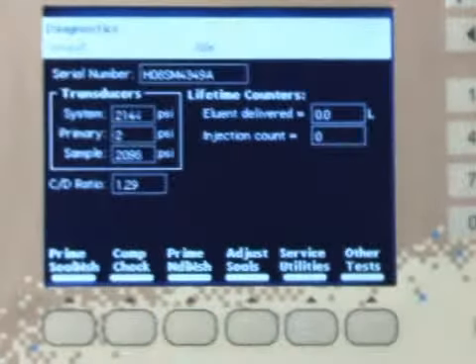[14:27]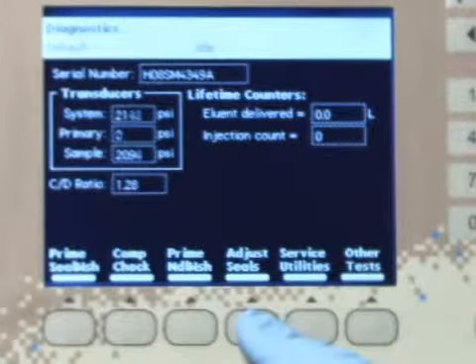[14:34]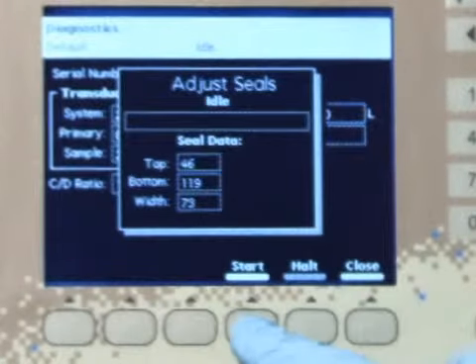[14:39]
Next, remove the column and create restriction by partially capping the line with a union and fitting plug. The restriction should generate at least 1000 psi back pressure at a flow rate of less than 3 milliliters per minute. A suitable container will be necessary to collect solvent runoff. To adjust the seals, access the diagnostic screen from the 2695 main screen. In the diagnostic screen, press the Adjust Seal screen key. Press the Start screen key to begin the test.
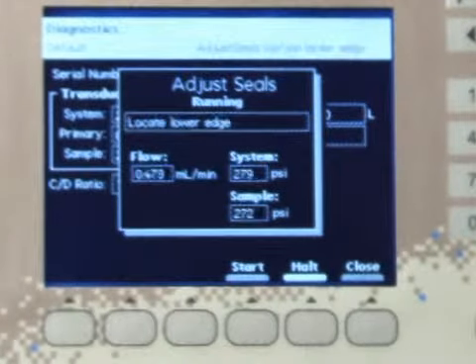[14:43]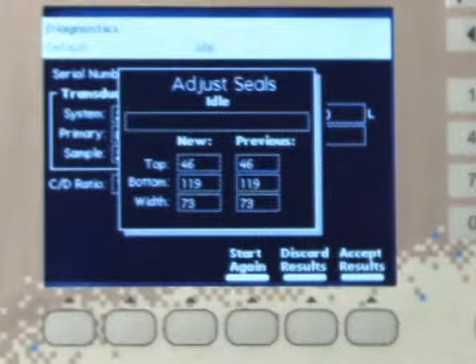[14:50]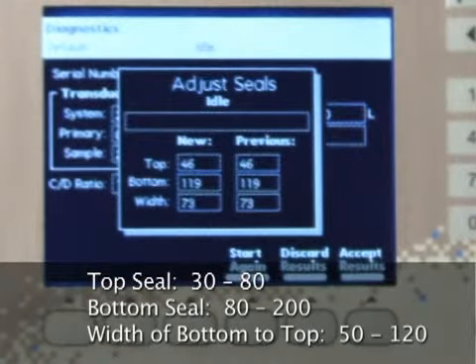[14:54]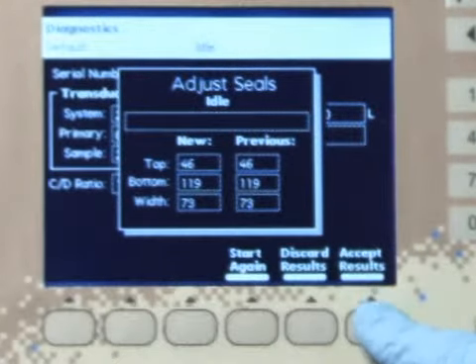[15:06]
When the test is complete, the screen will display Pass or Fail and the new and previous results. The new Adjust Seals parameters should be within the following acceptable range: top seal 30 to 80, bottom seal 80 to 200, width of bottom to top 50 to 120. If the new seal parameters are within the acceptable range, press the Accept Results key to save the configuration.